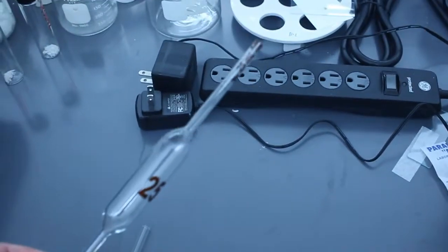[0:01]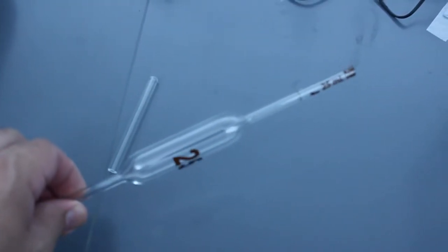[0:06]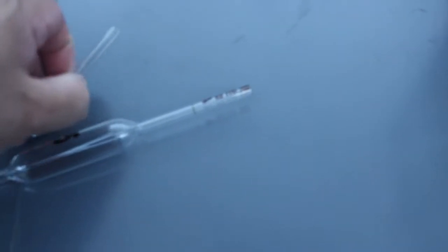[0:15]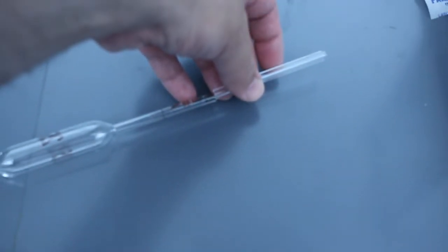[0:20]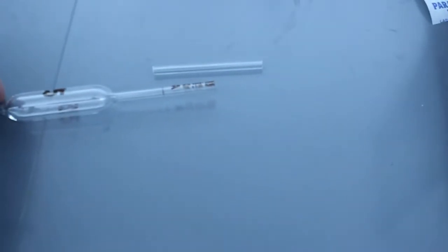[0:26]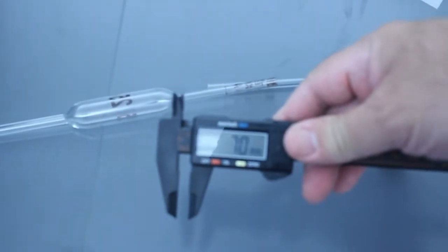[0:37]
So here is a volumetric pipette that is 25 milliliters. It was broken at the top, so I cut that section off, and from another broken pipette I cut a comparable section off. They're not exactly the same diameter, but the plan will be to fuse these two pieces of tubing together. Now in this case, the diameter of the tubing is about 7 millimeters in both cases.
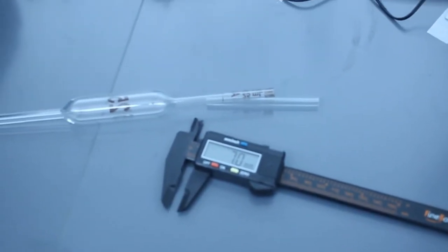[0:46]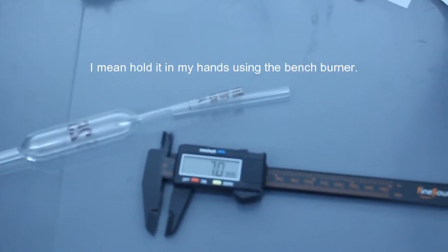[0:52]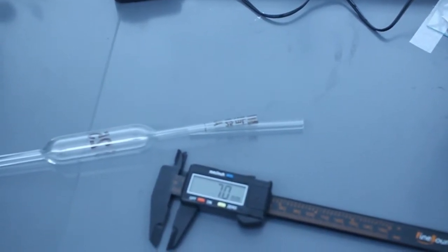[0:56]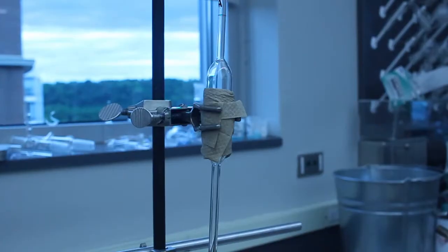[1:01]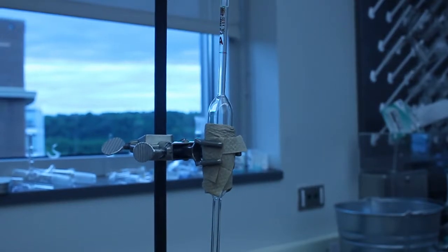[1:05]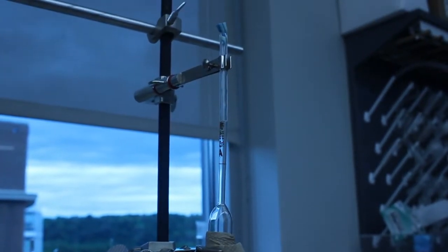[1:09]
They're not identical, they're very close. So that should be sufficient. And I'll show this in a second. Rather than doing this by hand, I'm going to mount this using clamps and go from there. I'm going to repair that 25 milliliter volumetric pipette, and I'm going to use the hand torch.
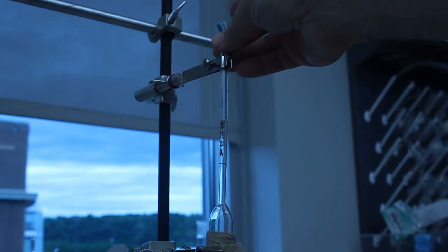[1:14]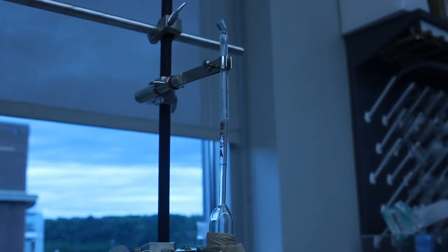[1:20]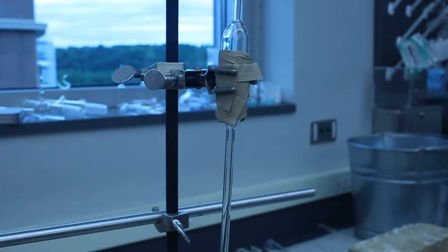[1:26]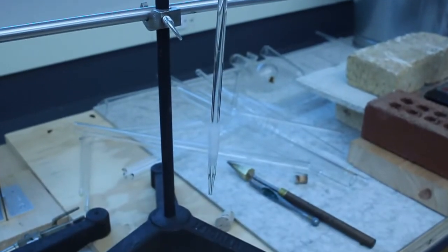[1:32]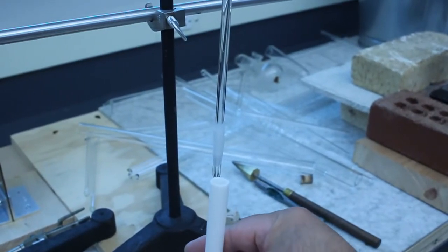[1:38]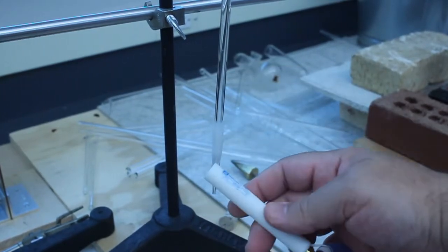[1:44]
So right now I've got the piece that I'm going to fuse from a different pipette locked into a clamp. This is a specialized clamp that we use for holding thermometers, and the body of the volumetric pipette is in this larger clamp. You can see down here at the bottom, this is a little bit of Parafilm, and what I'm going to do is hook up my blow hose here. I had to add this Parafilm because this is about 7 millimeters, and this is about 9 to, I think, 11 millimeters. So this is too small to fit into the silicone.
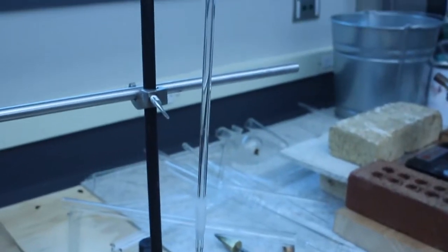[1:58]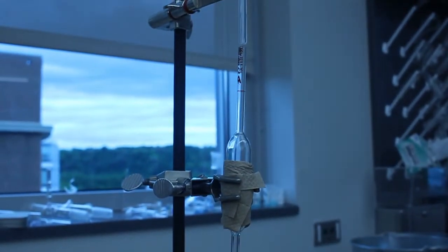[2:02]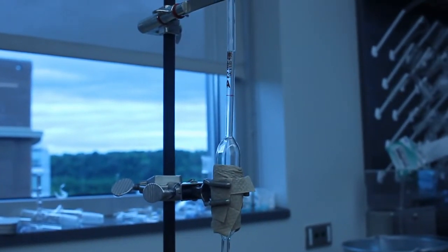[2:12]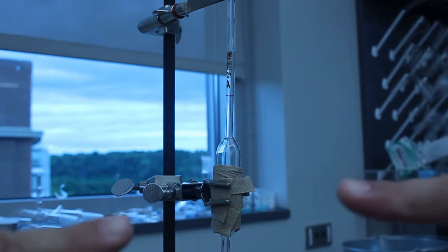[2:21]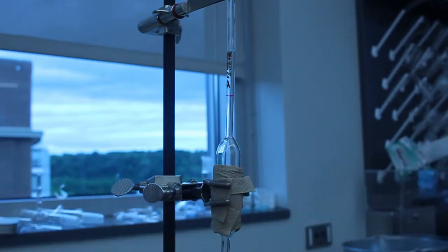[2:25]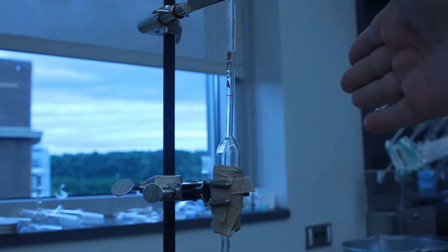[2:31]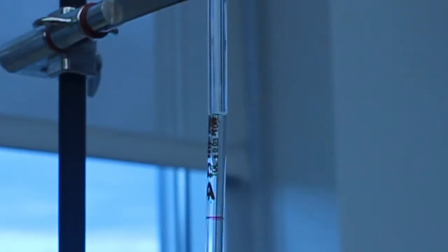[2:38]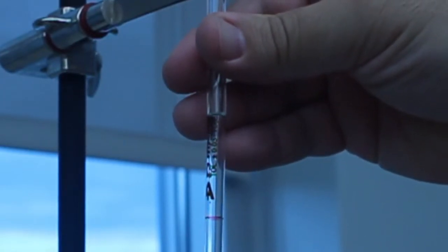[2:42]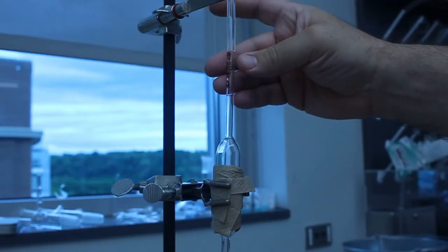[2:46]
And as I do this, I'm going to be using the hand torch to make the seal. I'm basically going to put these two pieces of glass tubing together, have them in proximity, and then make my straight seal, or butt seal, that way. The reason I'm doing it is if I bring the glass tubing together the way you normally do it, I am very worried that because of how small this diameter is, 7 millimeters, I'll get it off center and just make a mess of it. So rather than do that, I'm essentially going to get these two pieces of glass tubing in contact with each other while they're cold, tack them, and then go from there.
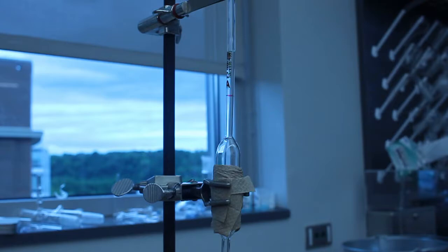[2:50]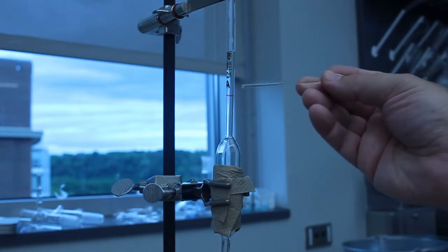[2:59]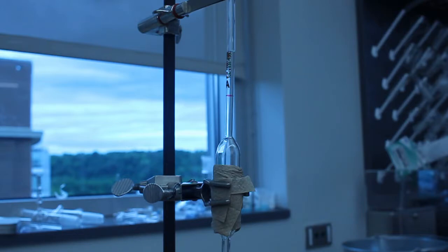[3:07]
One of the things that might become an issue is, if I have an air gap, in other words, a bubble between these two pieces of tubing, I can come in with this 3 millimeter rod and add a little bit of extra glass. Or, if I need to move some of the glass, I can use my tungsten pick.
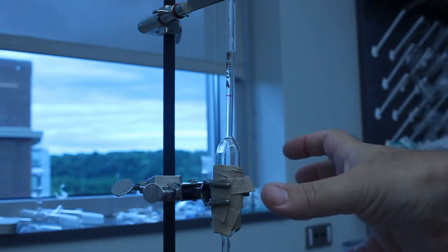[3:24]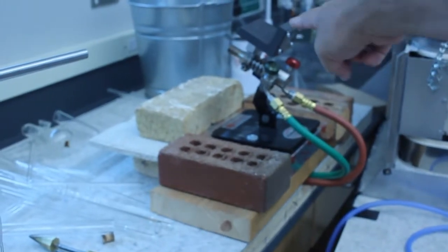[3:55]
This is actually how I started doing glass blowing, where I would have a hand torch. The work would be stationary, secured with clamps, and then I would come in with the hand torch and do what I needed to. So this is a perfectly valid technique, and it's the kind of thing where in some labs you only have a hand torch, so you don't have the ability to use the bench burners like we've got here in my research lab, like these really nice torches.
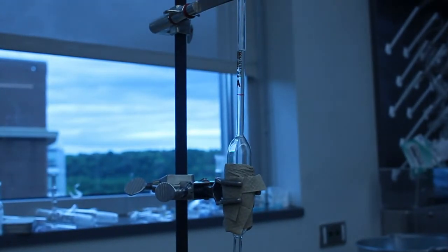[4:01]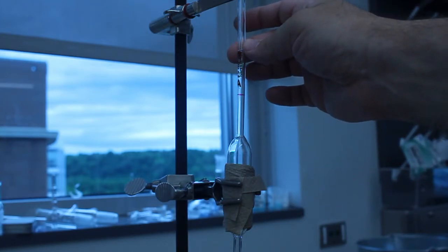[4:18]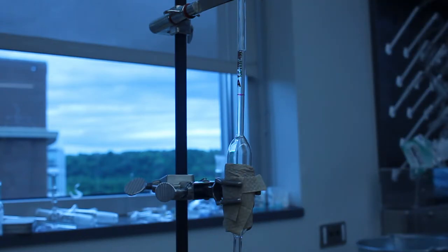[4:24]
In this case, because of what I'm fusing together, I'm going to use my hand torch and hold the work secure. I'll be able to blow through the bottom, and hopefully that'll give me good results. By having everything clamped up and aligned, I should be able to keep this straight throughout the entire process. Once I do have this fused properly, if I need to make any adjustments, I can always take it out of the clamp, go to the bench burner, heat this, straighten it out, and go from there.
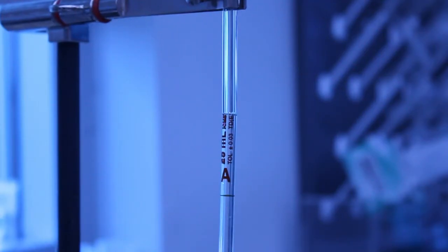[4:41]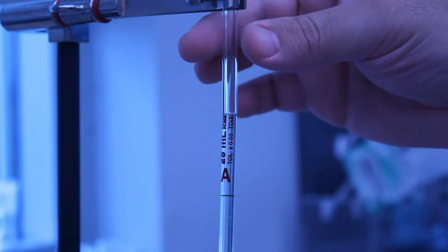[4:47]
I've loosened the clamp on the top, so this glass tubing is essentially falling downwards towards the body. That should help fuse them together. If I had the top tubing very tightly secured, when I start to heat this, they're not going to fuse together. They're going to actually move apart from each other. So that's something I want to minimize if I can. We'll see how that goes.
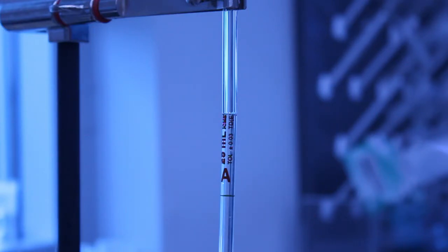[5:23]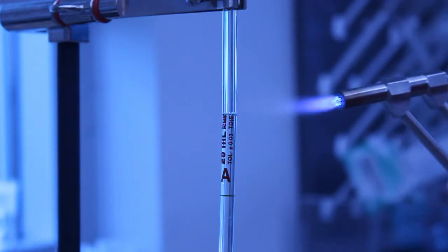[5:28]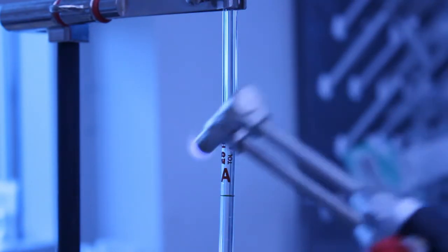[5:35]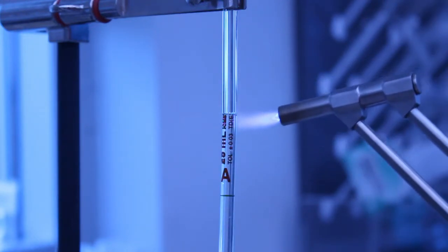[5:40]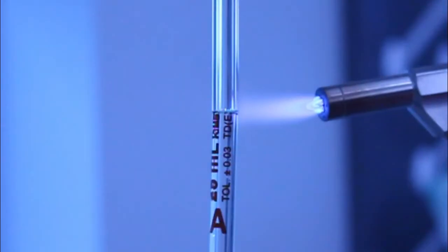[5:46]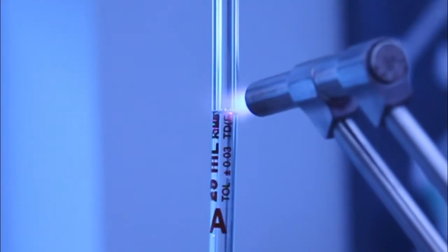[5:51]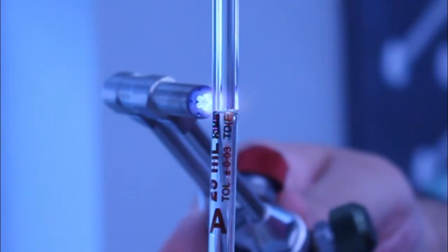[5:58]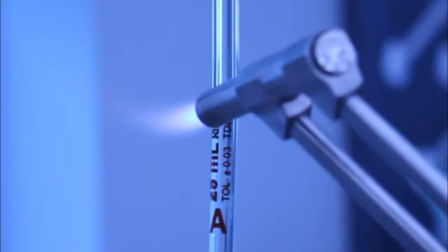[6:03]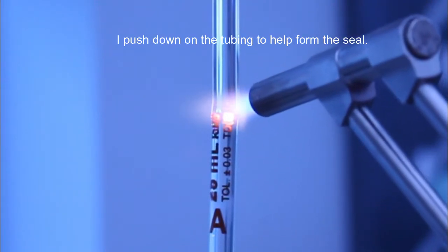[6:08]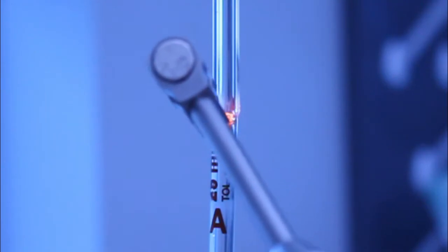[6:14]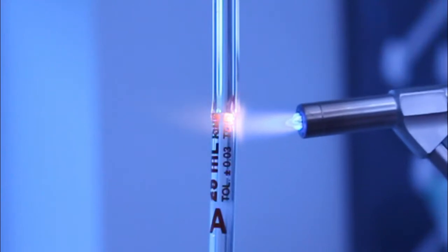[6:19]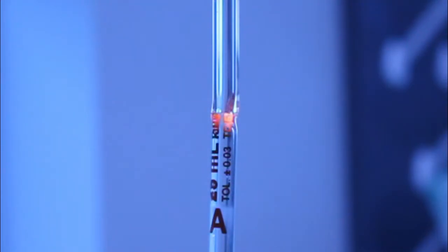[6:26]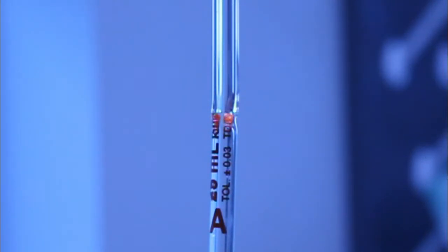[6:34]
So now I'm adjusting the hand torch, and I'm going to start off by going around, warming that up. I haven't put my blow hose in my mouth yet. I'll do that in a moment. Really what I'm going for right now is just to get a stick, basically get these guys fused together. I'm testing with my blow hose right now, and when I puff into it, it's definitely a seal, so that's a good sign.
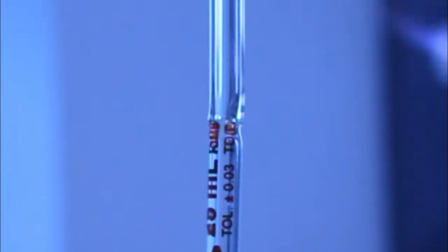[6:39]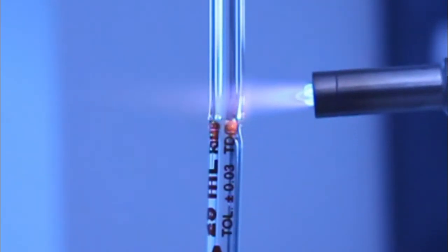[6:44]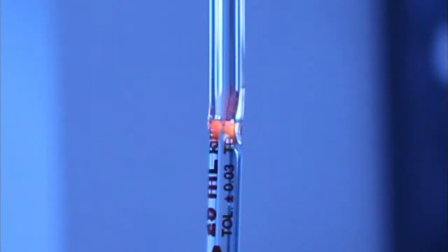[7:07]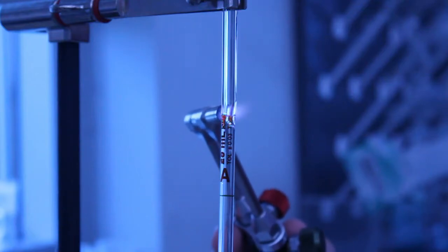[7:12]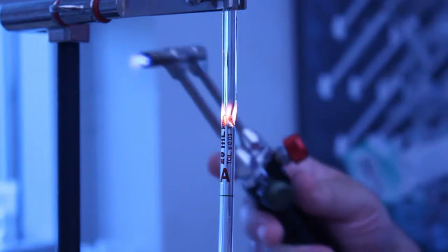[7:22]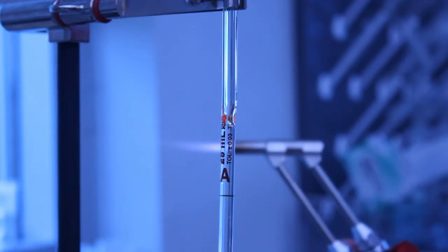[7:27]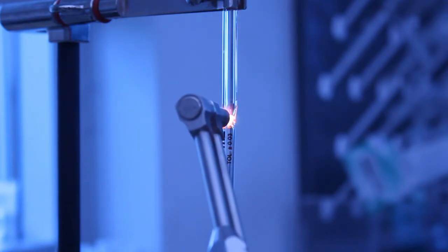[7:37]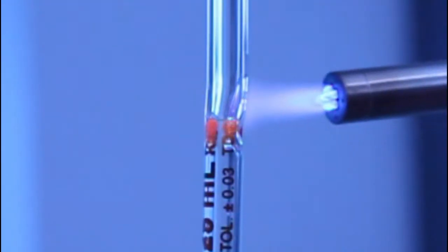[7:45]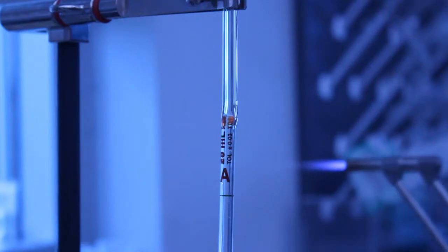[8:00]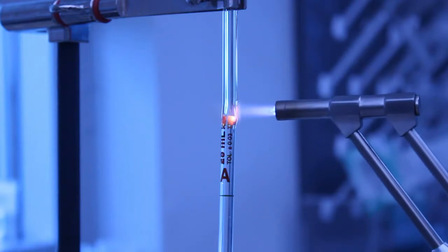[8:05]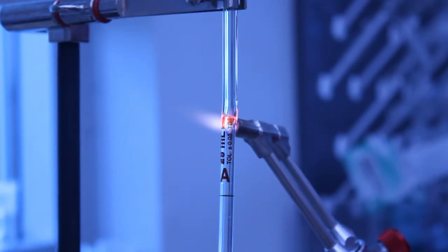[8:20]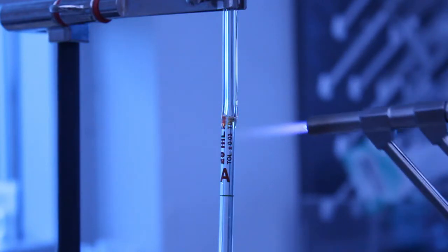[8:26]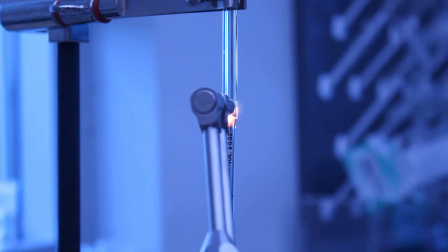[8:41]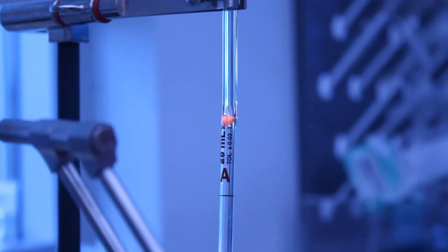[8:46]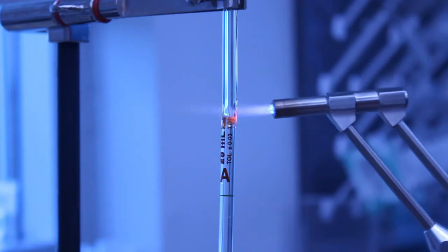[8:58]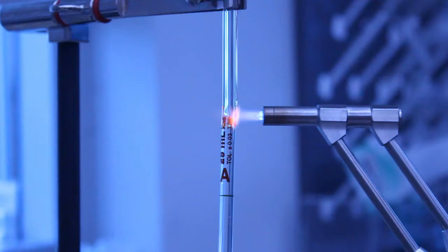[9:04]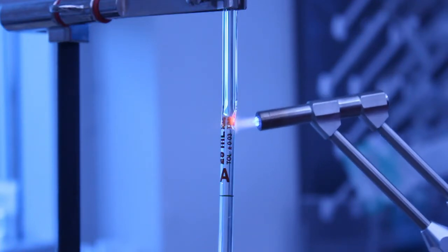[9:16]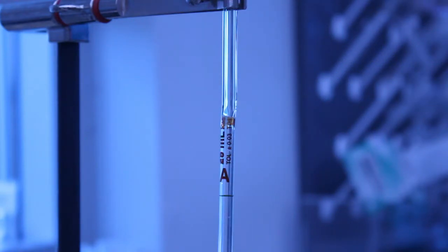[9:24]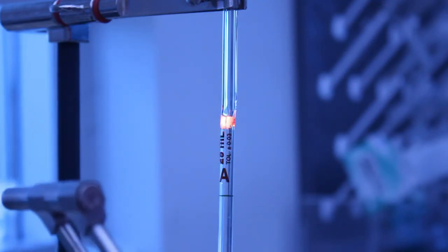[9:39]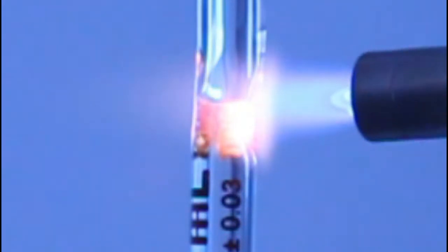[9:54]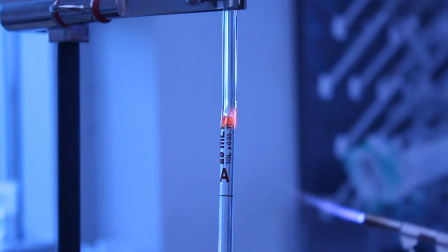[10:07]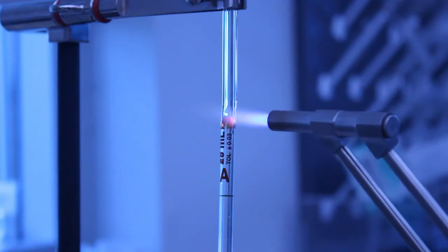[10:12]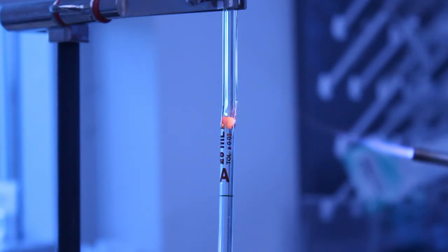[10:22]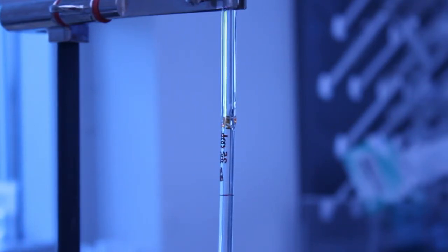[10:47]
I made what was almost a comical mistake, if it wasn't so serious. My blow hose got kinked off camera, and as I'm blowing, I'm wondering, why is the glass not moving? And it's because literally my blow hose had a constriction. So again, now I'm going to actually rotate the piece. See how we're doing here.
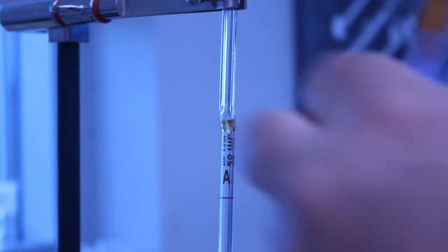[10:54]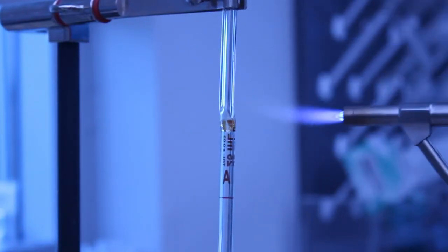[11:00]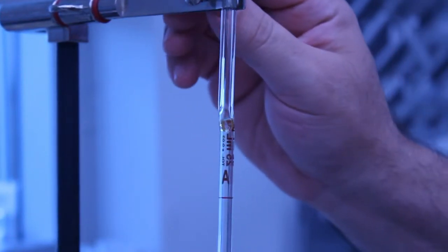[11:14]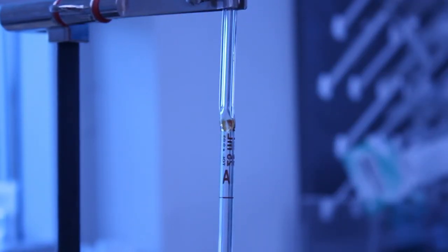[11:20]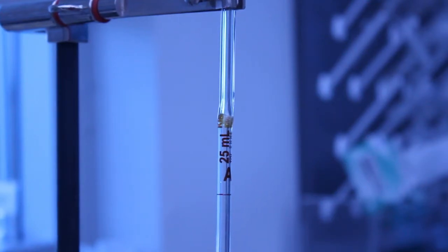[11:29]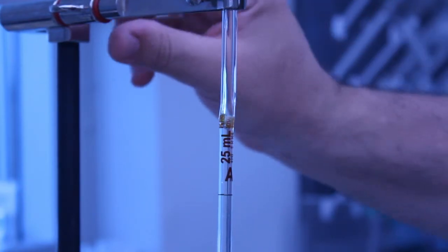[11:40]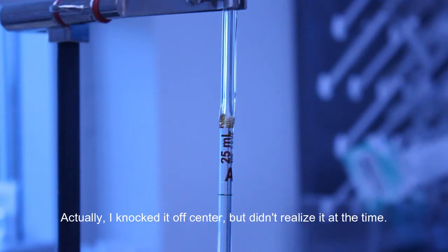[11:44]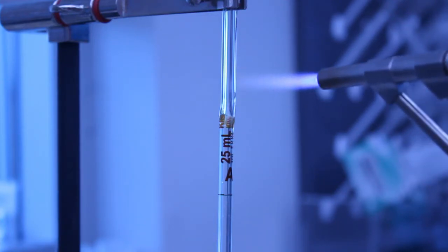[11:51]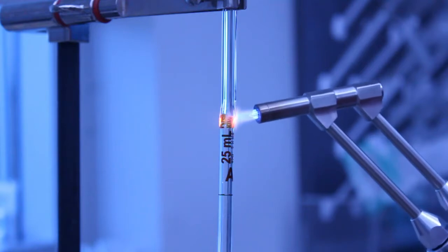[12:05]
So the downside of using the clamp is, I think a little bit of the torque from the clamp has pulled the tubing a little bit off center, but that's okay because that's something I can fix later on by just going to the bench burner and then heating and rotating, because really what I'm looking for here is to make sure I've got a good uniform seal. In other words, that it's a hot seal, not a cold seal. So that's why I keep alternating, heating one side, going to the other, and rinse and repeat.
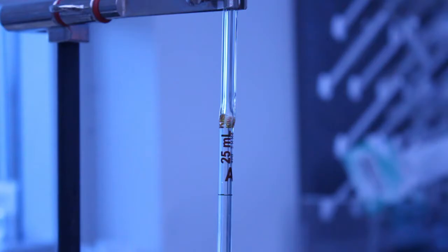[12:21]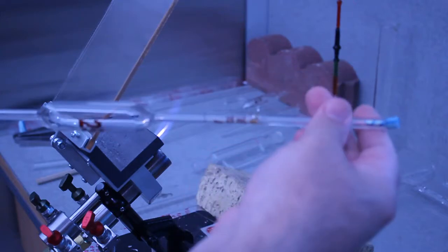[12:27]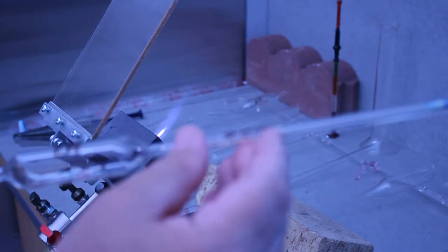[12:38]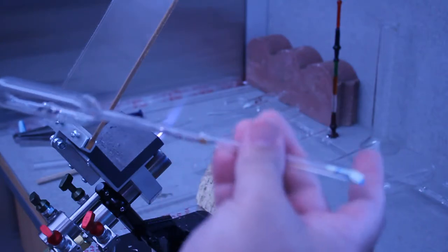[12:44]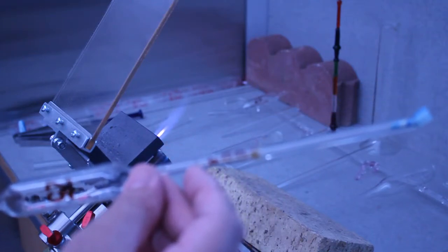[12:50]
Let it collapse a little bit. Pump it back out, and go from there. At this stage, I have successfully fused this small piece of tubing onto the body, but you can see it's not centered. So what I'm going to do now is, on the bench burner, I'm going to gently go back and forth and heat this area, and then just using rotation, I'm going to try and straighten this out a little bit more. I have to be really careful. I don't want to heat down here and distort that, because then the pipette becomes useless.
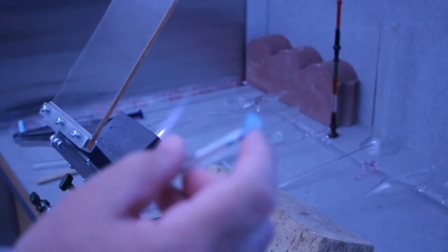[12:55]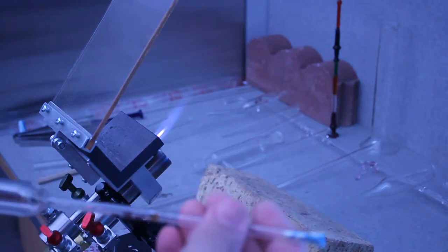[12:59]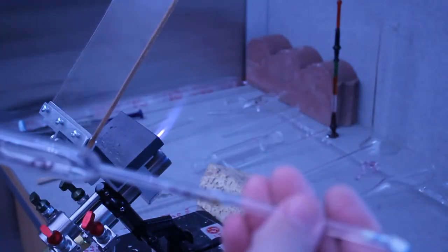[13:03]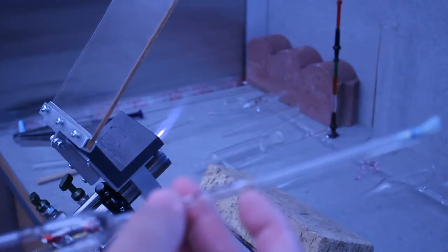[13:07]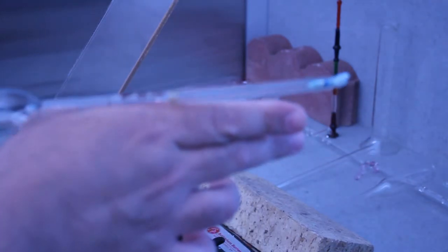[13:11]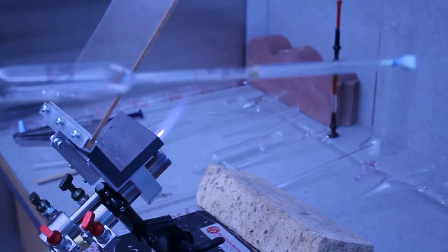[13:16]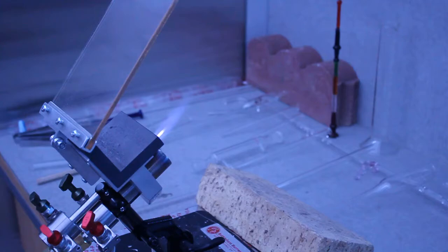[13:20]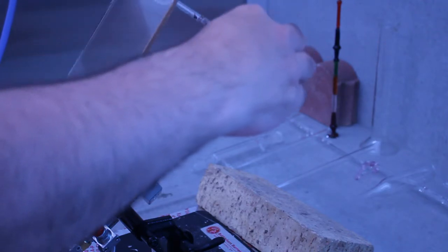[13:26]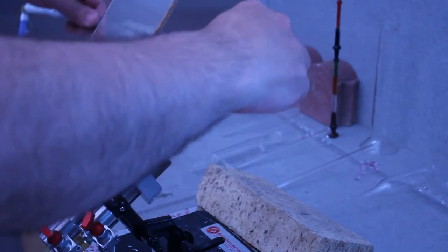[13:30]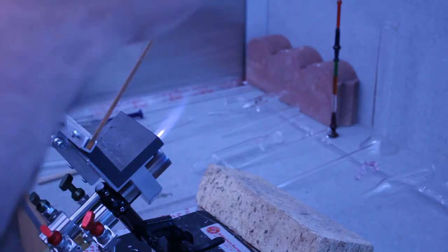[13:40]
By the way, I was always going to come back to the bench because I haven't fire polished this. Also, I've still got the blow hose attached, so as I'm heating this, if I need to, I can puff into it. But I'm really going to just try and make a very small adjustment to try and get this so that it's straight. It's got a wobble in it right now, which is not terrible, but certainly I can definitely do worse. Hopefully I can do better. And I should also mention I'm using a very soft flame where I've got a lot of fuel in it. I'm not going to crank it up and use that very rough annealing flame because of how small, how delicate this is.
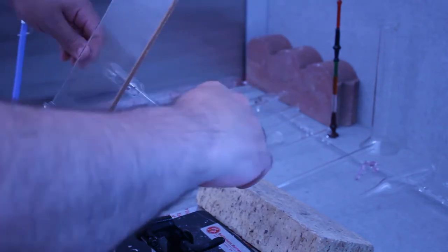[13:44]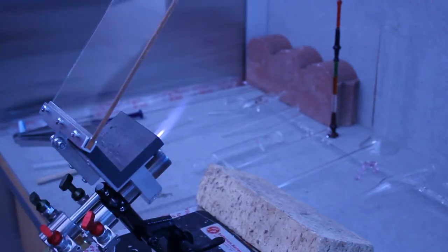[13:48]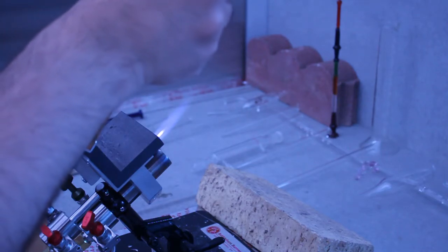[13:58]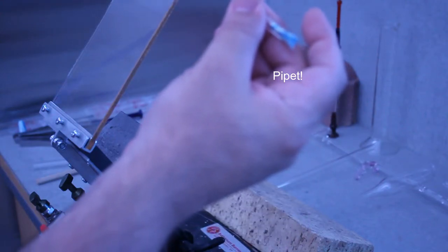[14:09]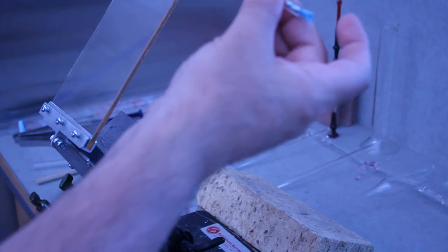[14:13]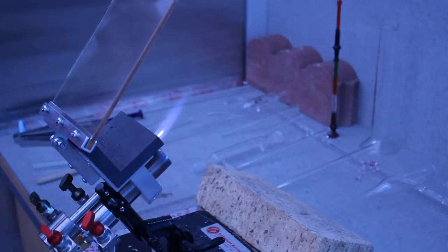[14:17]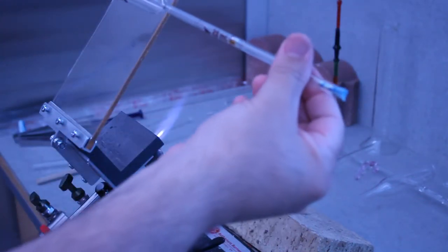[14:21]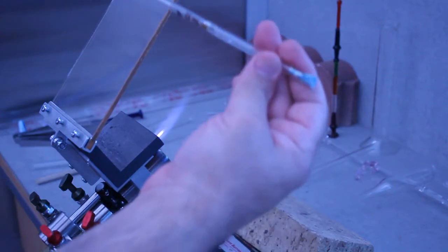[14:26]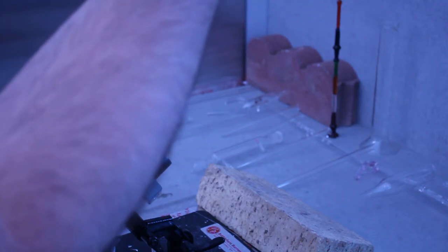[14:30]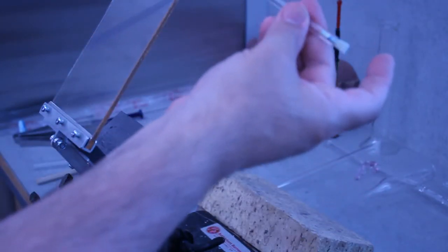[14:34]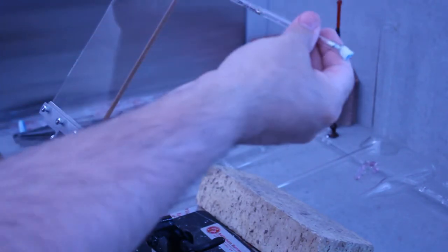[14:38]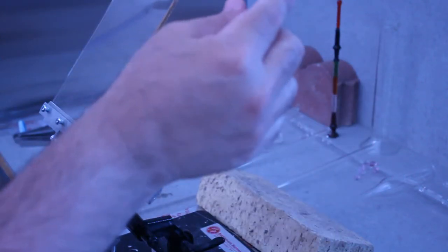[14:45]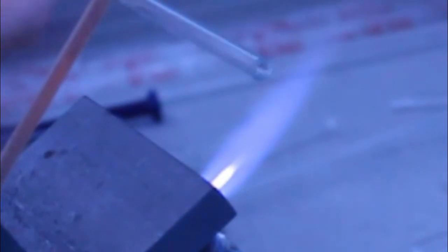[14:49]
So in straightening it out, I got a little bit of a constriction right here. However, for the function of the pipette, that won't impact it, and I can confirm that by testing it. But it's a little flat spot. But straightness, it's good. This is the issue of using this, again, very thin or very small diameter tubing, and just a little bit of heat will cause it to deform. And I don't want to blow it out too much, so I'd rather have it caved in a little bit relative to blown out, because once you blow it out, there's nothing you can do about it. So at this point, I'm going to say this part of the repair is done. I need to fire polish the end, so that's pretty straightforward.
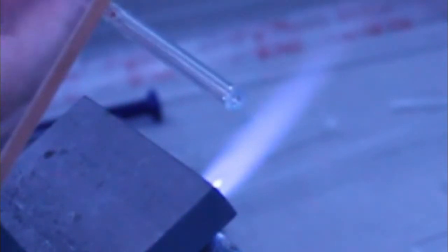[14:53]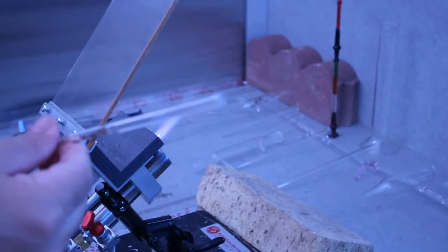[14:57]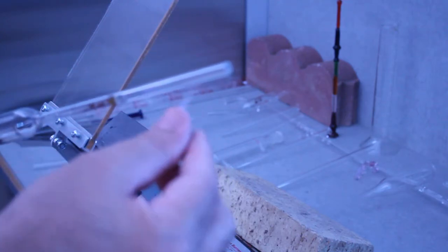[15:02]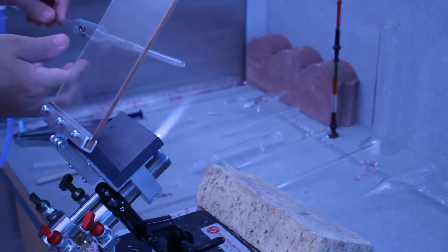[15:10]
And see, look at that. I spoke too soon. Once I started fire polishing it, it actually caused that to crack. So I'm going to have to remove that section of glass. I'll just go ahead and fire polish it for safety. You can see, yeah,
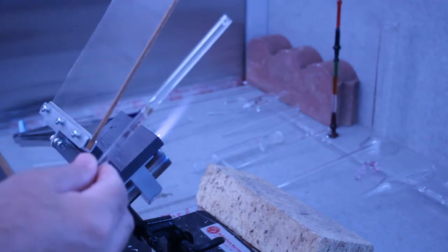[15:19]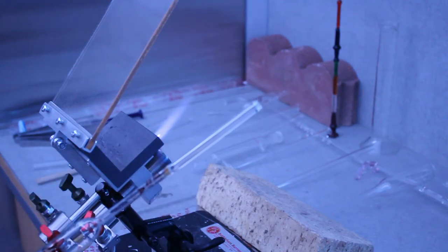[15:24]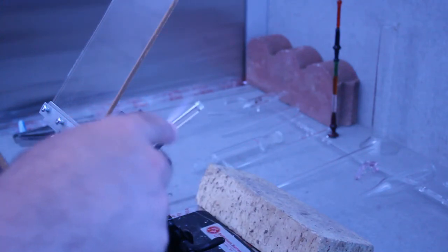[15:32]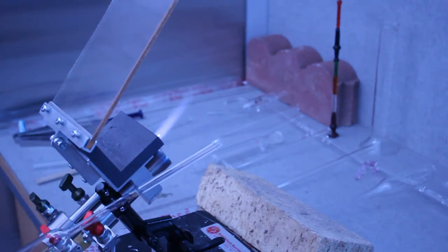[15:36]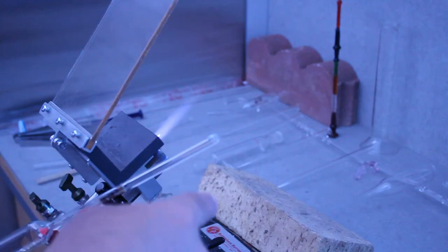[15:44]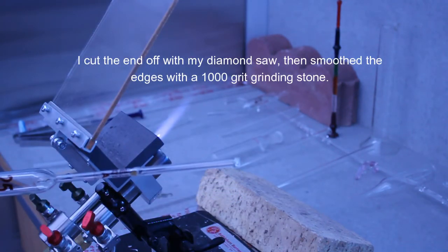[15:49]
that's a problem. So this particular glass that I used, it's got a lot of stress in it, and so as I'm doing something which is trivial, fire polishing it, I've now made it worse. So that's something I can fix, but something to, like I said, be aware of. In other words, putting more heat on it at this point is not going to make it any better. So what I'm going to do is I'm going to cut that off, and then manually with a file polish it down, remove the sharp edges.